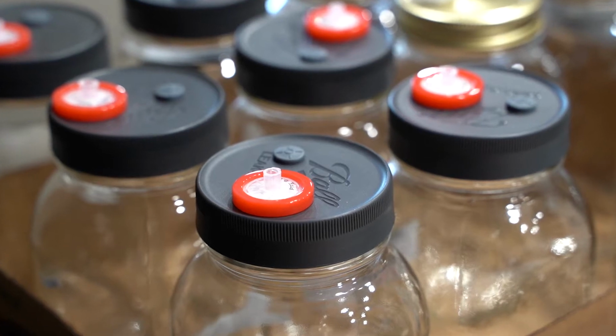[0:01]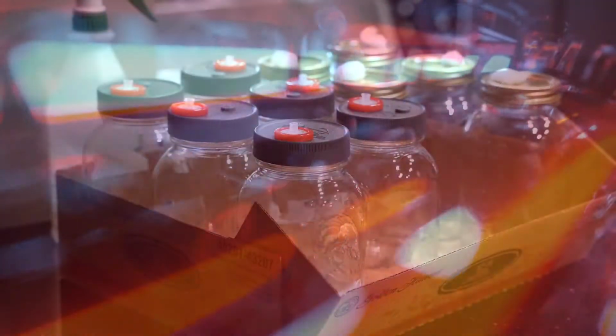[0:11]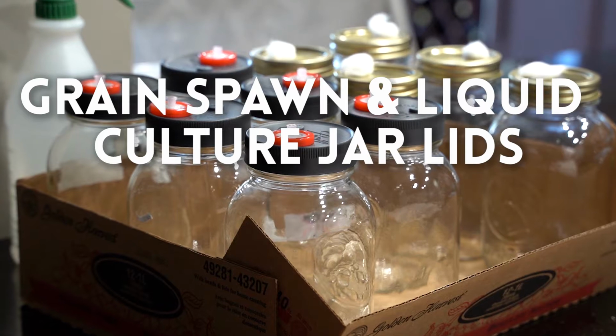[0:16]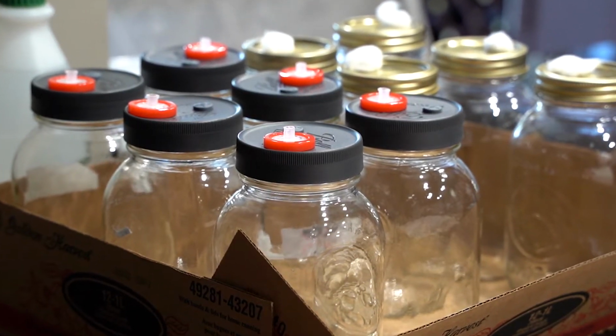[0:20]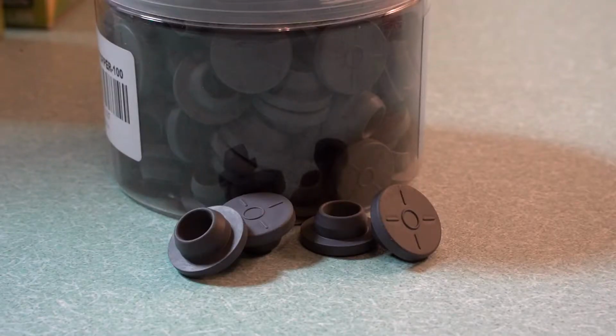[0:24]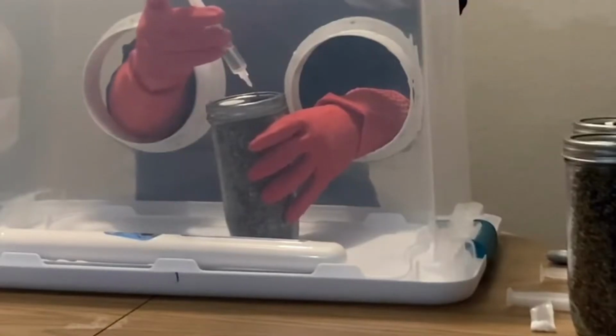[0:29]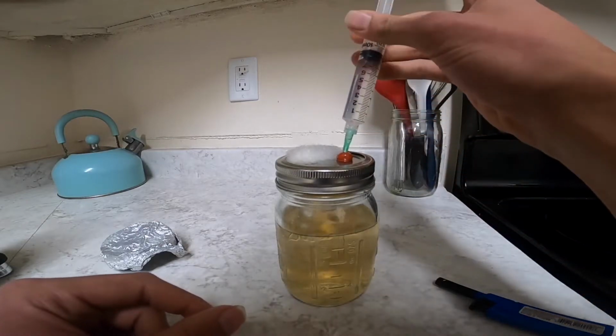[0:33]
This video is about how to make reusable jar lids for liquid cultures and grain spawn jars for growing mushrooms. They have a self-healing injection port and a syringe filter. These jar lids allow for easy inoculation of grains or liquid cultures that have been sterilized.
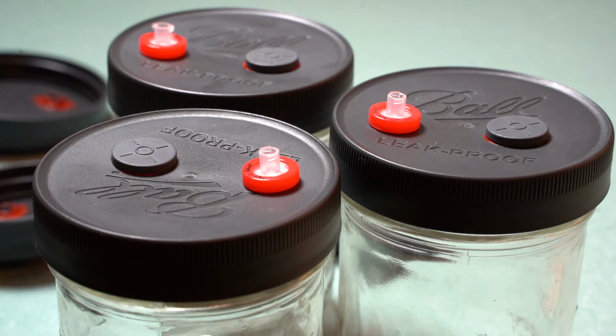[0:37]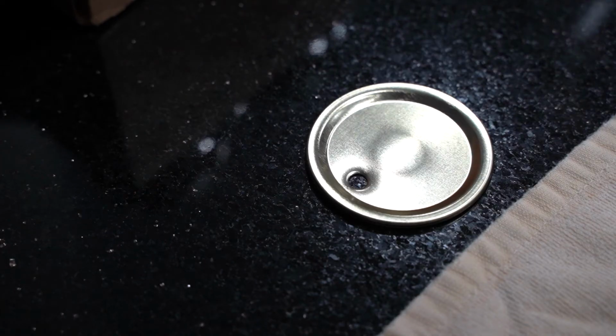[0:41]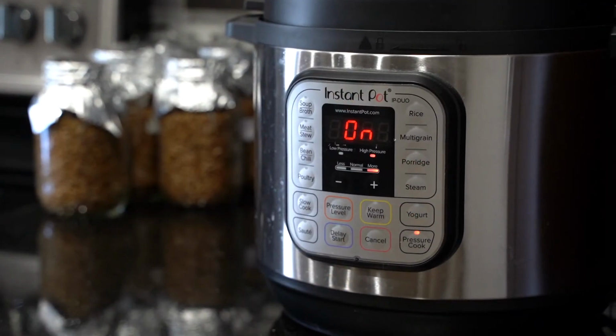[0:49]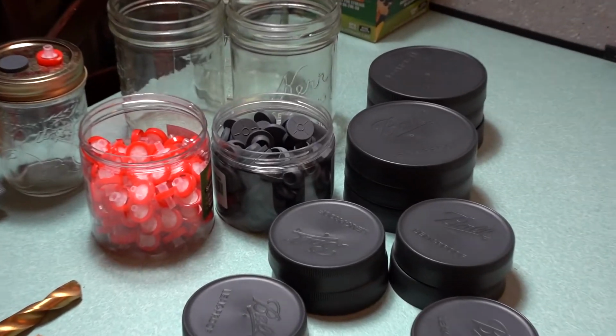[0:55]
Metal or plastic jar lids can be used, but plastic jar lids are a good choice for liquid cultures, as metal jar lids may start to rust after a while. These jar lids can be sterilized many times without warping or deforming and can be used in a pressure cooker or autoclave. I am using the Ball brand jar lids because they're reusable, heavy duty, and leak proof.
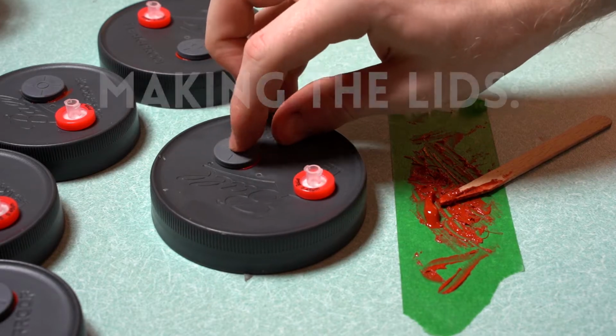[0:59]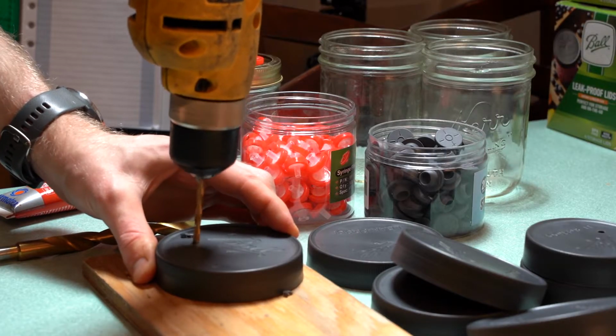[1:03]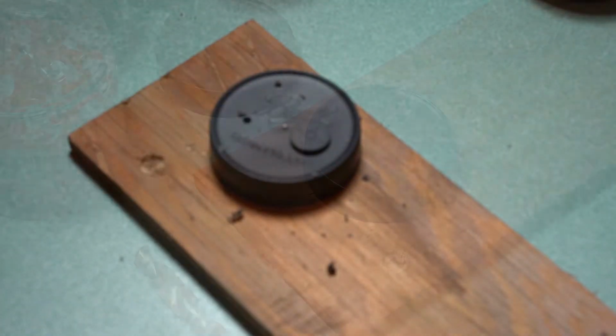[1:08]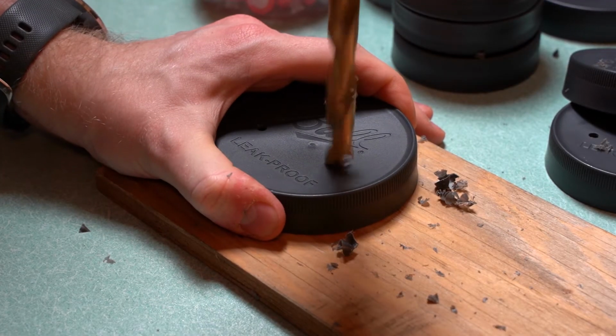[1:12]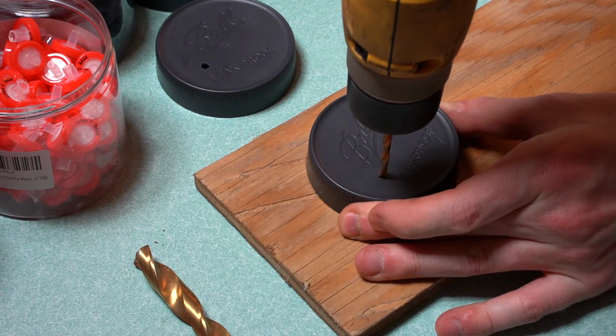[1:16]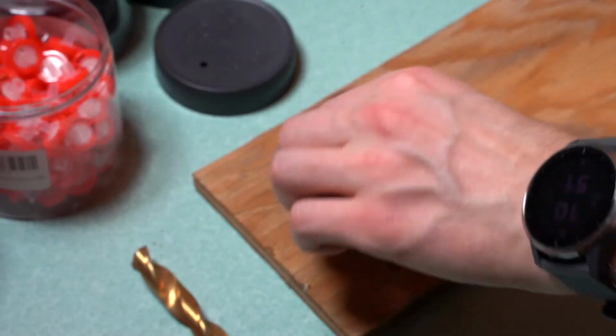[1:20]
Two holes are drilled in the lids to fit the injection port and syringe filter. The size of the holes will depend on the size of the self-healing injection ports and syringe filters that you use. I used a half-inch drill bit for the self-healing injection port and a number 18 or 0.1695-inch drill bit for the syringe filter.
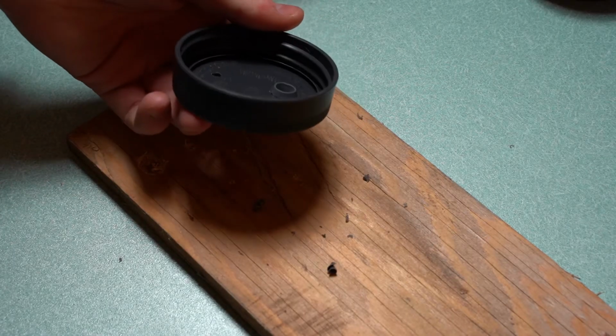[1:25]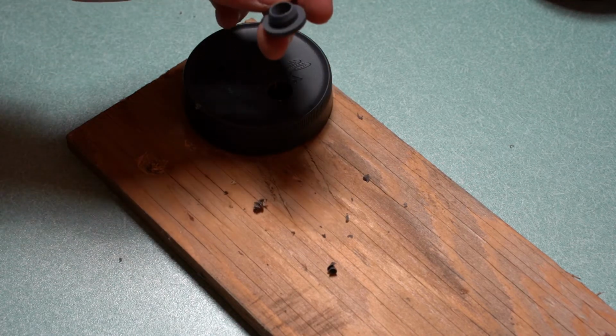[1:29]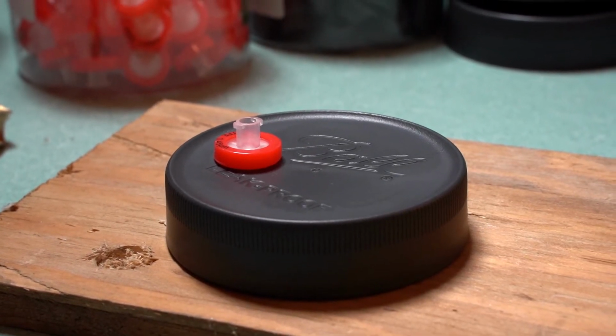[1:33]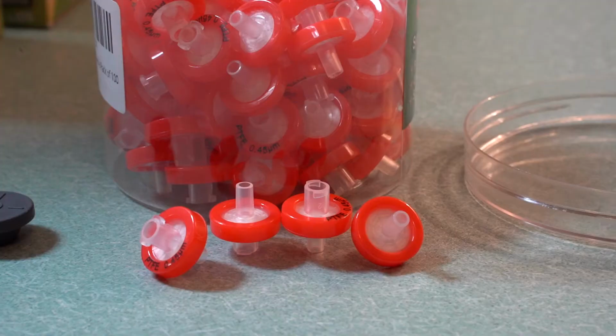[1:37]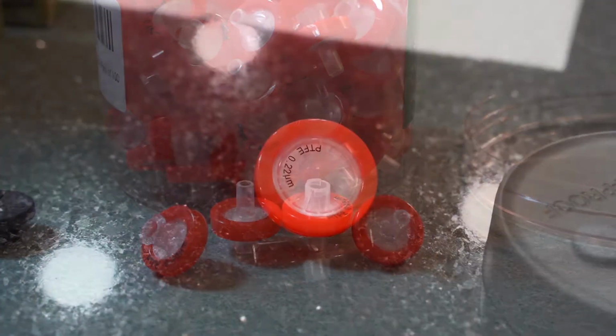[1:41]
The self-healing ports prevent contamination from getting inside and make inoculation very easy. The syringe filter allows for adequate air and gas exchange while keeping bacteria and other contaminants out. In this video, I use a 0.45 micron syringe filter, but it's better to use a 0.2 micron filter.
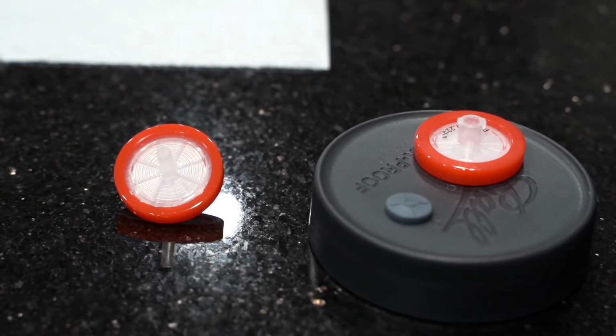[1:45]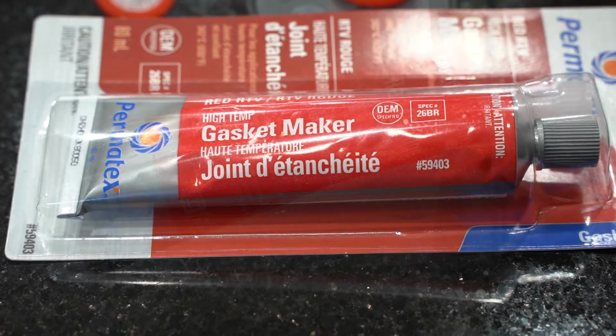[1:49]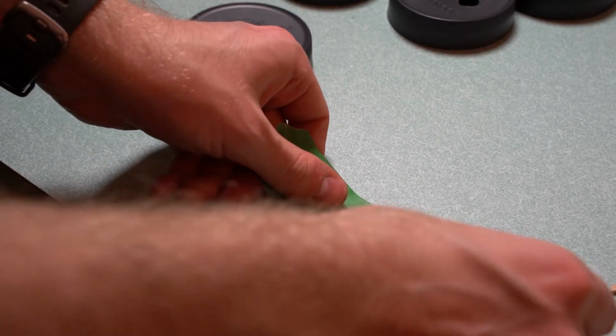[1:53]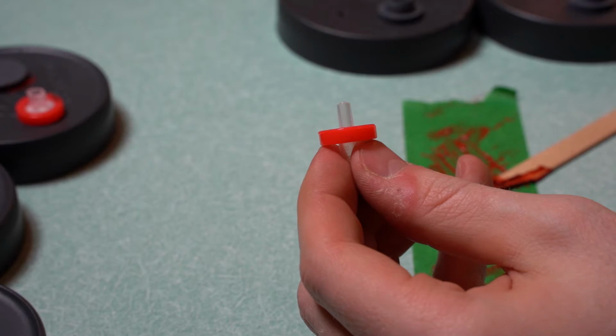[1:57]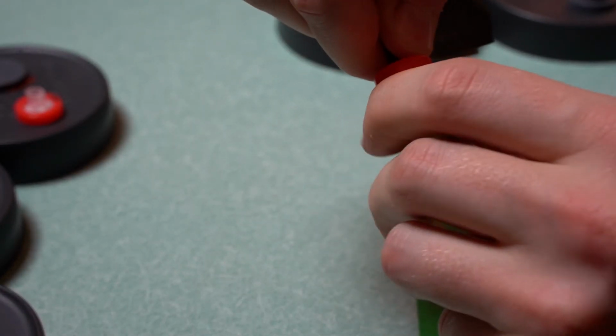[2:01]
The injection port and syringe filter are also sealed with RTV high temperature silicone. The syringe filter is sanded to make it rougher so it sticks to the silicone better.
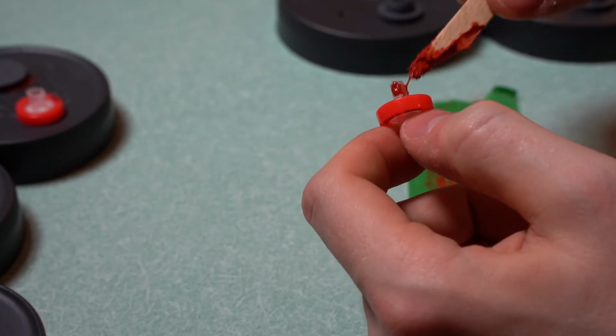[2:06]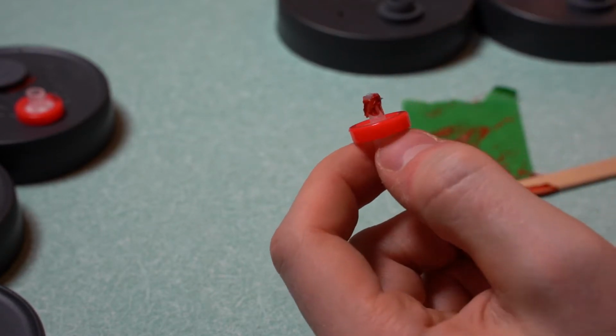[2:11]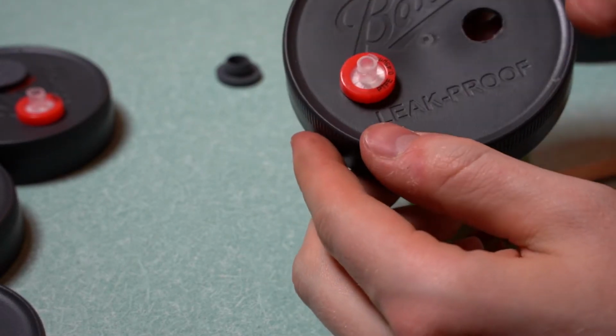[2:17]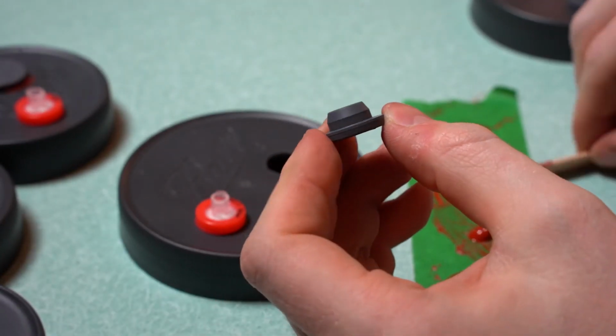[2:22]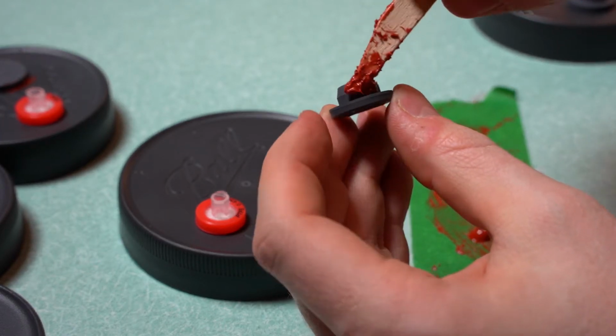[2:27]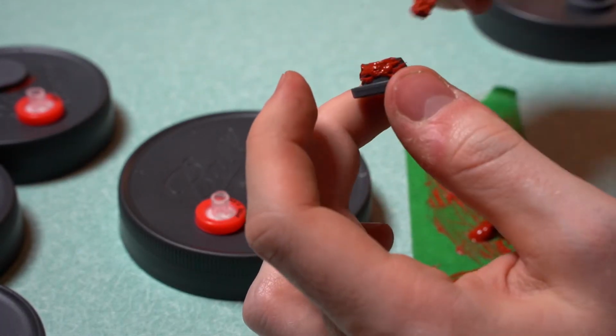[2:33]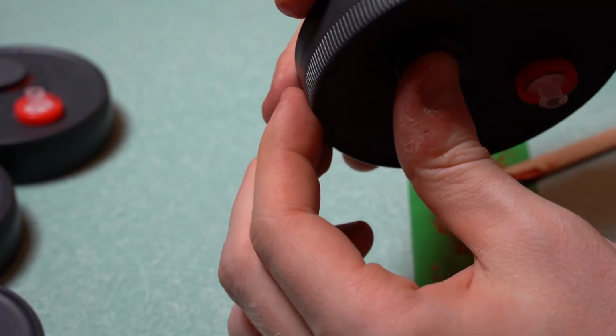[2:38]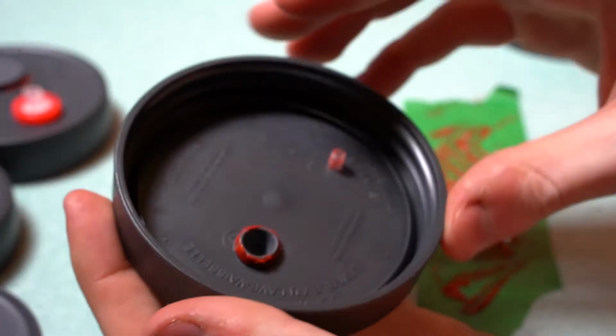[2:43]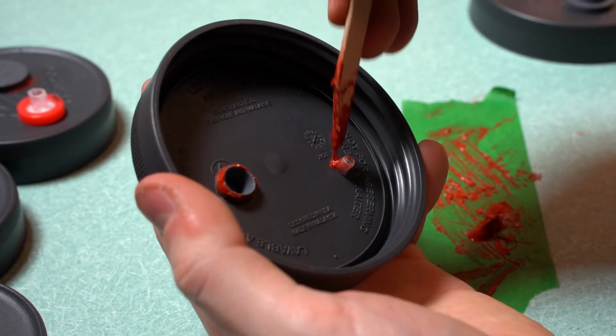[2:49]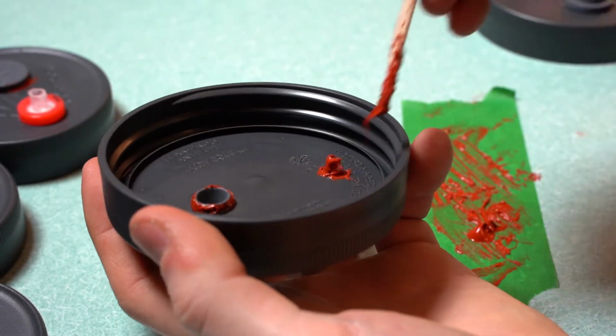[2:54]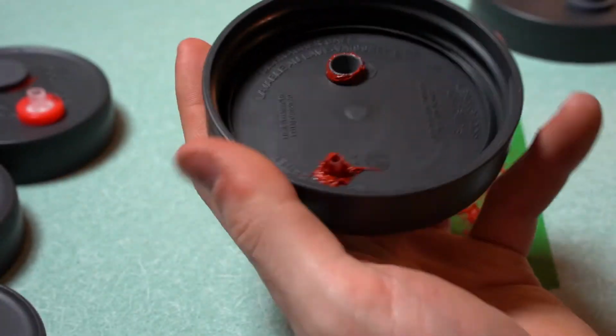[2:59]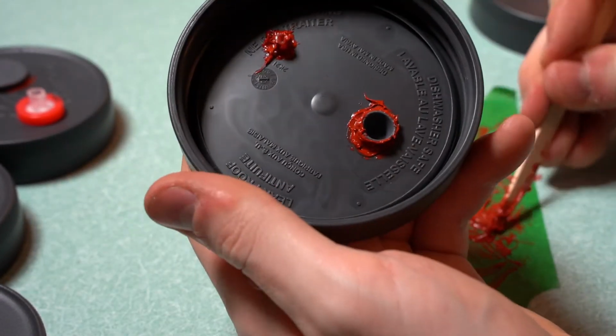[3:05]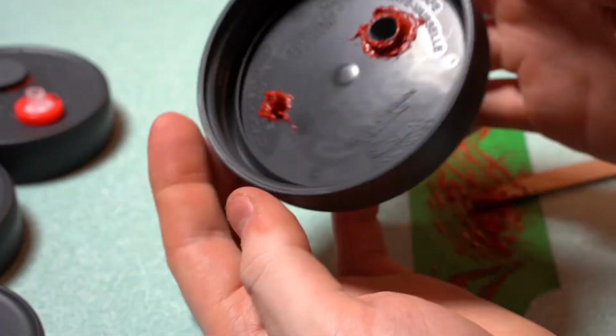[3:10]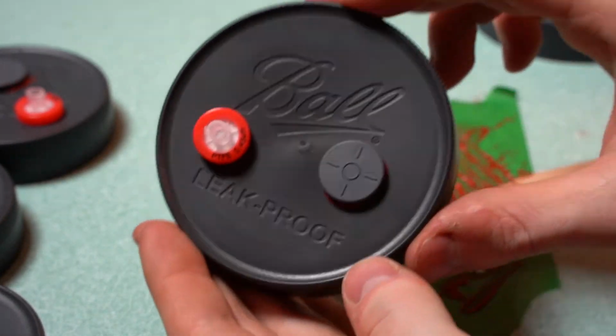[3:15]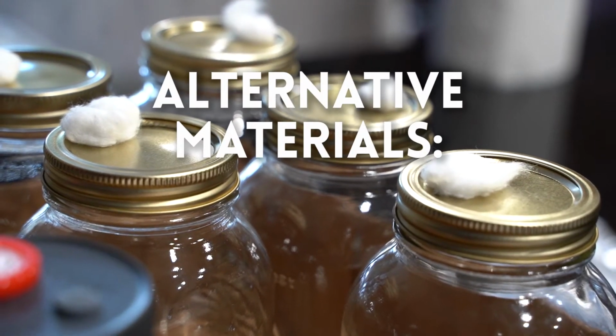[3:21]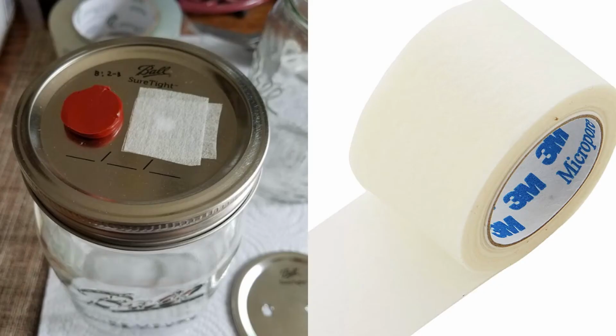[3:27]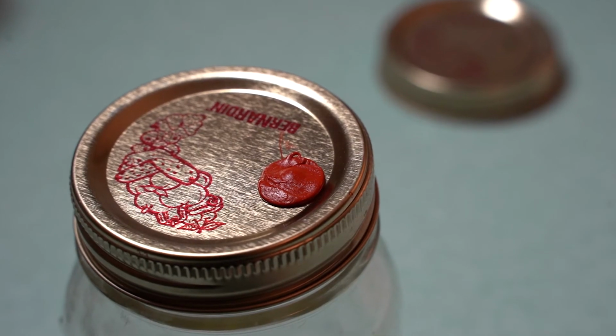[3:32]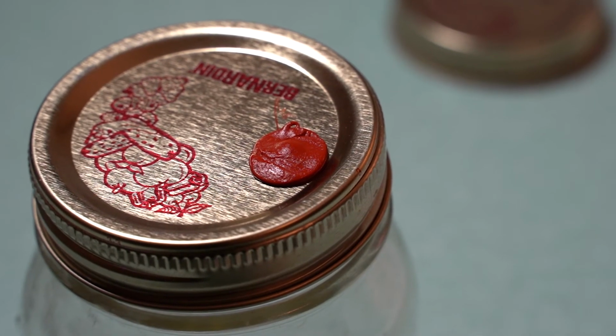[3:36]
Some alternatives to syringe filters are breathable synthetic filter discs, micropore tape, cotton balls, or polyfill stuffing. An alternative for the rubber self-healing injection port is to make one with the high temperature silicone.
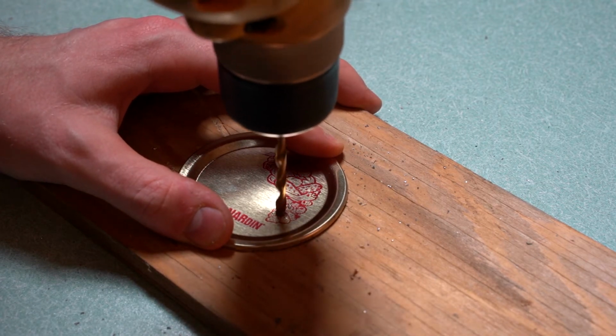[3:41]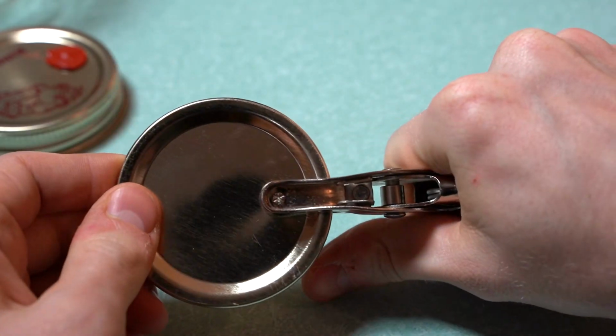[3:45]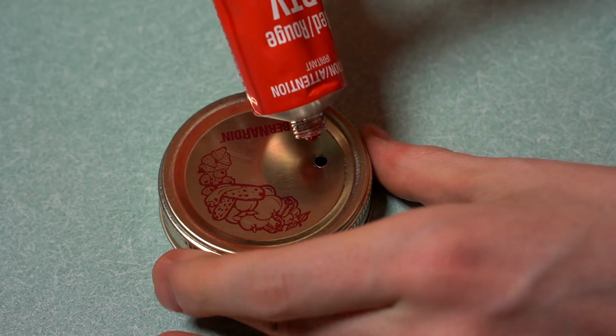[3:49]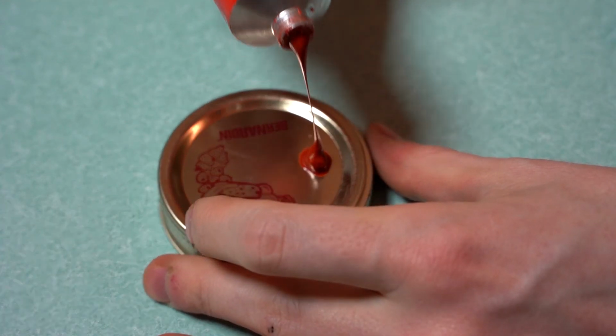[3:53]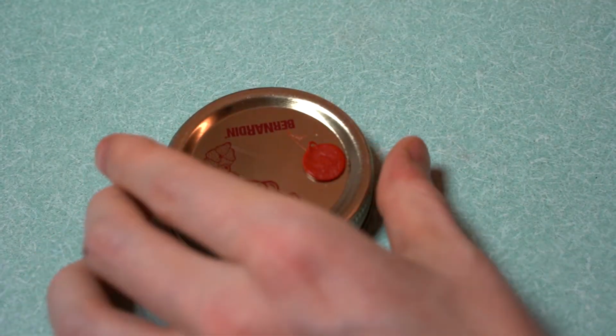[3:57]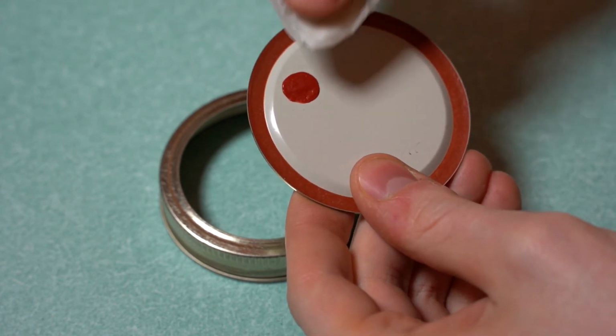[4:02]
This can be done by making a small hole in the jar lid and adding some silicone on top of the hole. For metal canning lids, a hole can be made by drilling or with a hole punch. After the silicone is added, it can be flattened a bit with a damp paper towel. All of these alternatives serve the same purpose, but may be cheaper if you want to save some money.